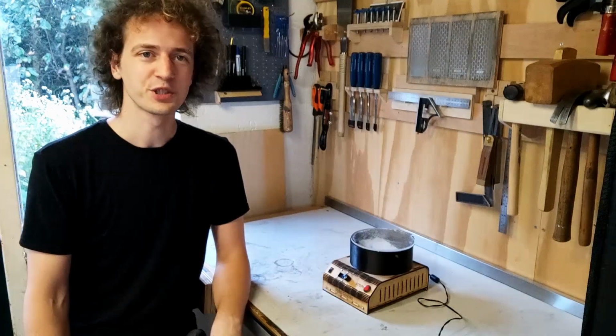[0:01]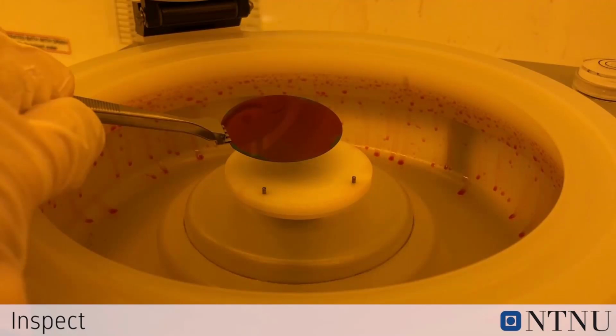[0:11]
Hi, I'd like to show you my DIY spin coater. A spin coater is a device used for putting a very precise thin coat of liquid on a flat surface, on the order of a few micrometers. They're used a lot in the semiconductor industry, for example, to spread an even layer of photoresist onto a silicon wafer or PCB for etching.
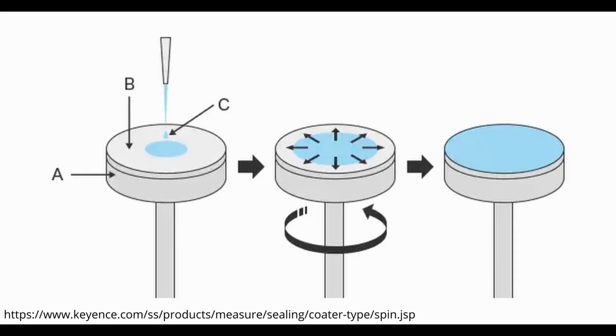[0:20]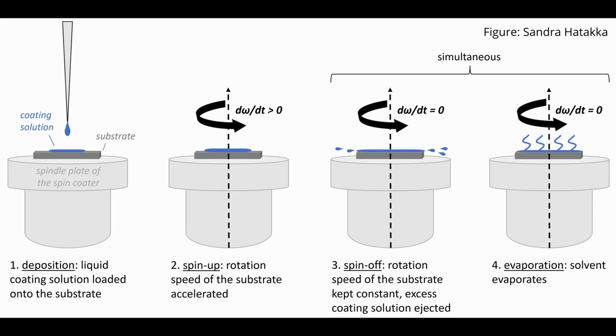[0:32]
The principle is pretty straightforward. You dispense some of the liquid onto the center of the substrate you want to coat, and then you spin it up. The liquid will get flung out from the center and it'll spread out. A lot of it will fly off once it reaches the edge, but some of it will stick to the surface. It's because of this balance between the centrifugal force and the surface tension that you get a very thin, even thickness across the entire surface.
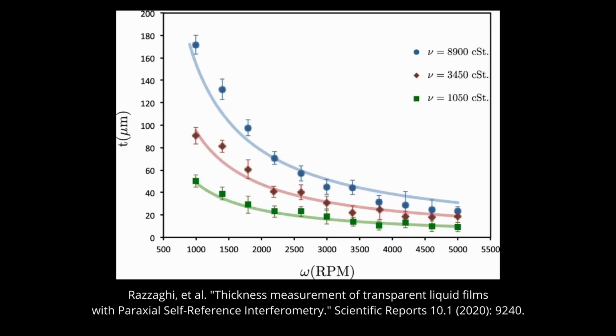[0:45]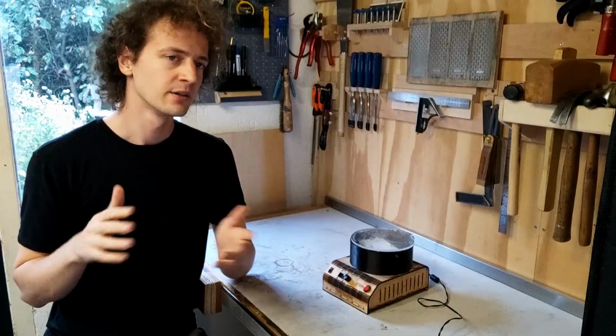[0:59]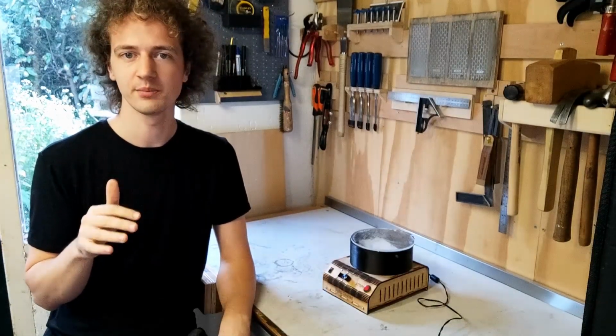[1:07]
The process is very repeatable. The only major factors that determine the coating thickness are the viscosity of the liquid and the spin speed. So how consistent you can get this thickness really depends only on how accurately you can control the RPM of the motor. For me, the reason I needed a spin coater is I was doing an electrowetting project where I wanted to put a very thin coating of silicon rubber onto a PCB in a way that's repeatable so I could do multiple experiments and not have to worry about the thickness affecting anything.
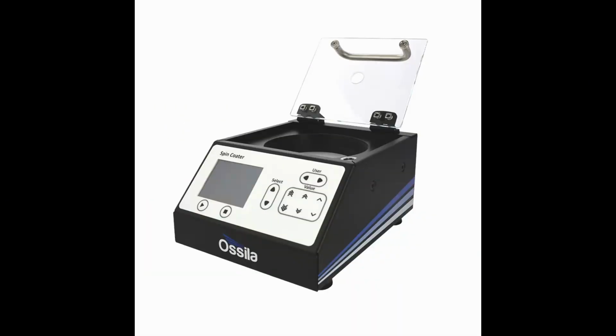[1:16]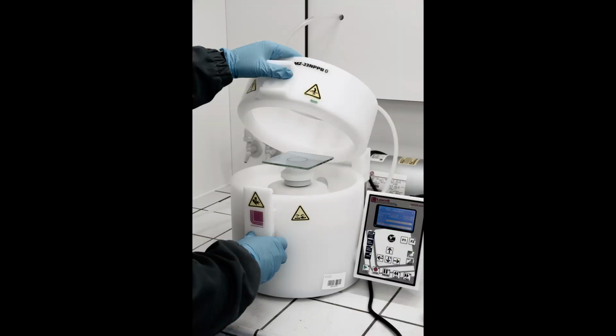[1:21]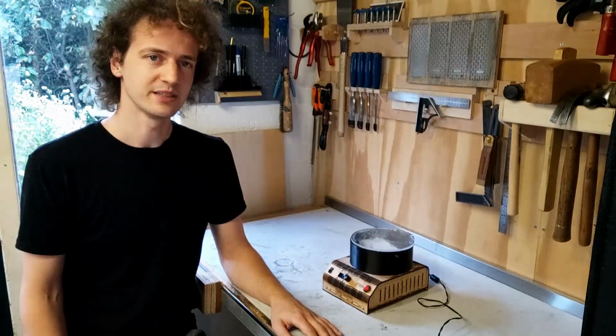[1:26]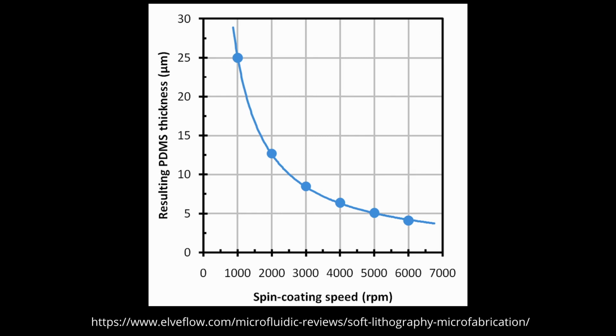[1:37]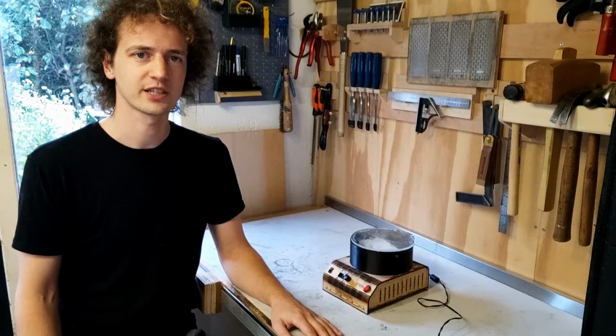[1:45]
Professional off-the-shelf spin coaters are very expensive, costing thousands or even tens of thousands of dollars. I figured I could make my own for less than 100 euros. I considered using just a simple brushed DC motor, but thanks to the drone and RC car community, high-quality brushless motors and their speed controllers are really cheap and easily available these days. From reading the literature, it seemed the RPM range I was looking for was between 500 and 6,000-ish. Most drone motors spin much faster than this, so I had to actually take care to pick a slower motor, like below 2,000 kV, to make sure it could spin slow enough without stalling.
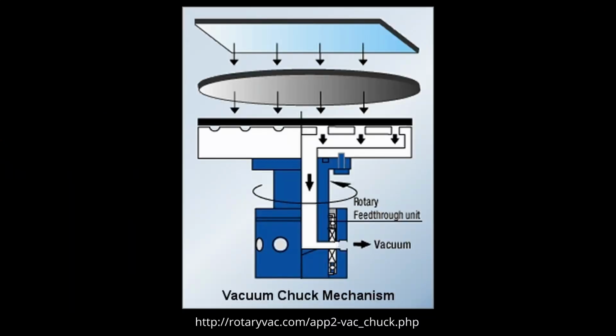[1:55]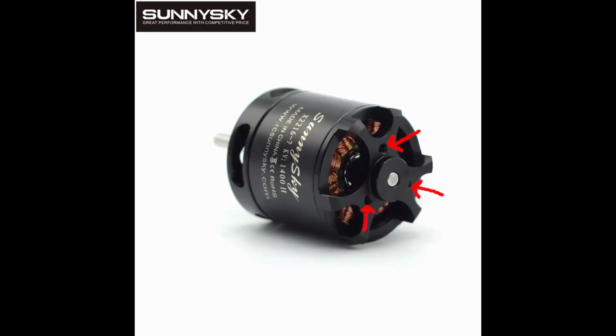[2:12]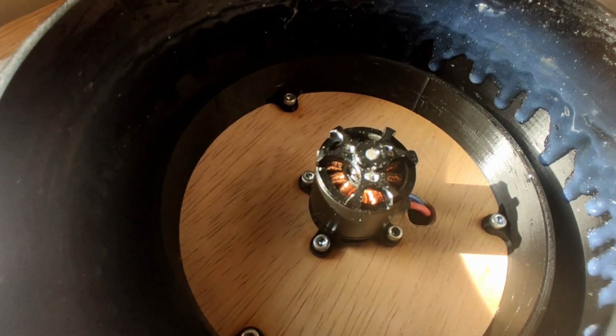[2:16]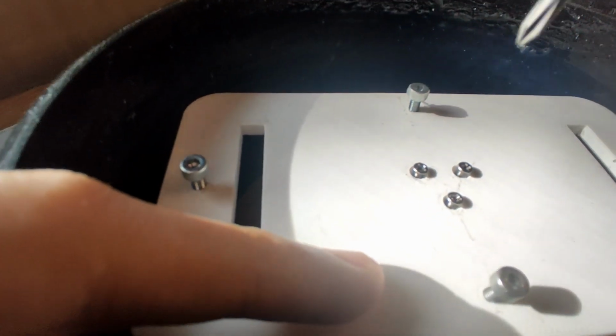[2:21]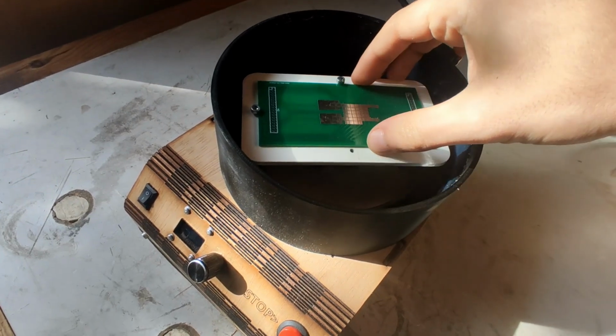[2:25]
To hold the PCB in place, commercial spin coaters often use a vacuum chuck to basically suck on the underside of the PCB to keep it in place. This involves creating an airtight seal in a spinning platform, and that's just something I really wasn't looking forward to doing. To keep it simple, I noticed that some brushless motors have tapped holes in the rotor, so I figured I could just 3D print or laser cut a platform that fits my PCB, and then bolt that down into the rotor and use more screws to clamp down the PCB.
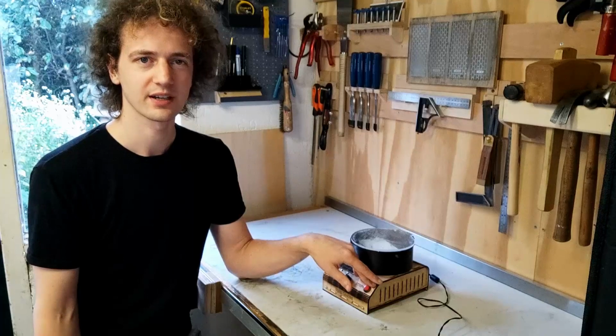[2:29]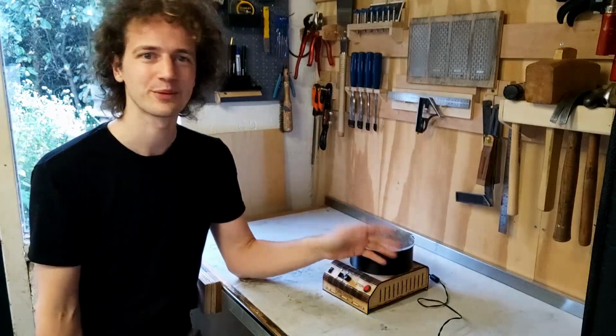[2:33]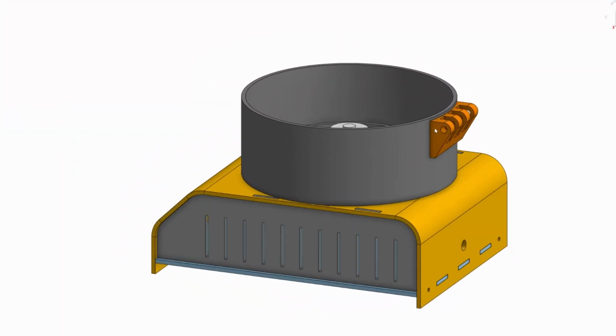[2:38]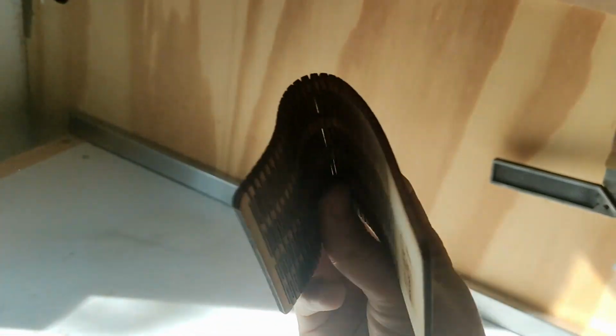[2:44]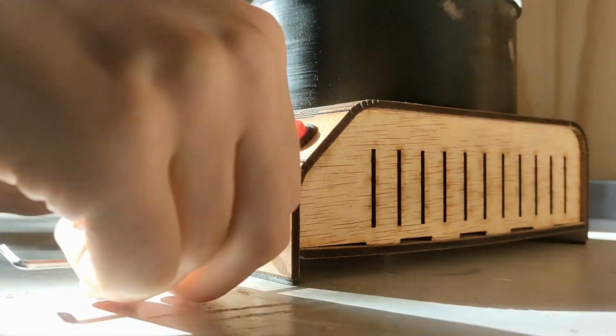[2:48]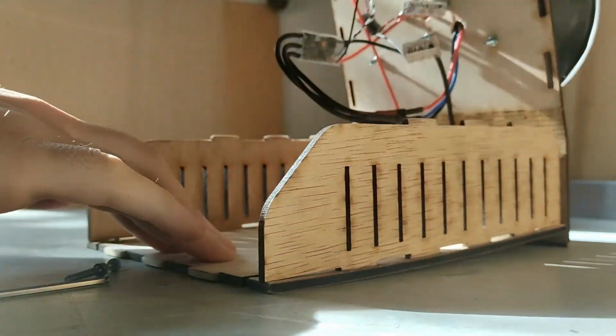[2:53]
For the enclosure, I laser cut some plywood, because I have access to a nice laser cutter at my local hackerspace, and plywood is cheap. I ended up going for a design where the front, top, and back are all a single curved piece. I cut a dense pattern of alternating slots using the laser cutter. It's a technique that's often used to make plywood flexible. The whole thing is held together using only four screws, two in the back and two in the front, and I only need to remove the front two to basically curl open the whole thing.
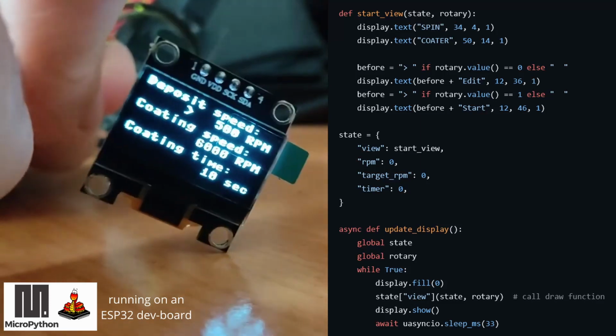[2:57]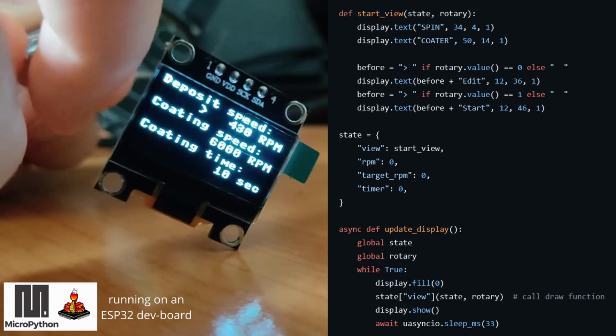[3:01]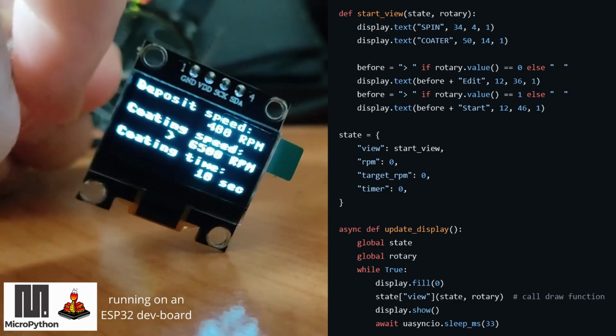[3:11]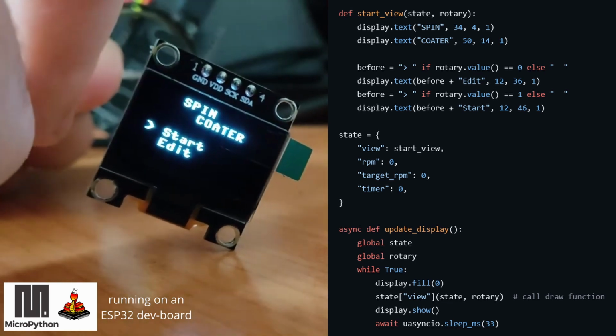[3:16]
While I was waiting for the rest of the parts to arrive, I got started on the user interface. I tried a few different approaches, and I ended up writing an update loop that runs different draw functions based on where the user currently is, kind of inspired by how the React framework works in JavaScript. The final interface is simple, but I feel it's intuitive.
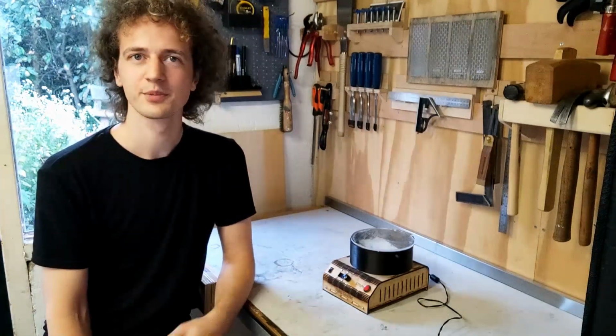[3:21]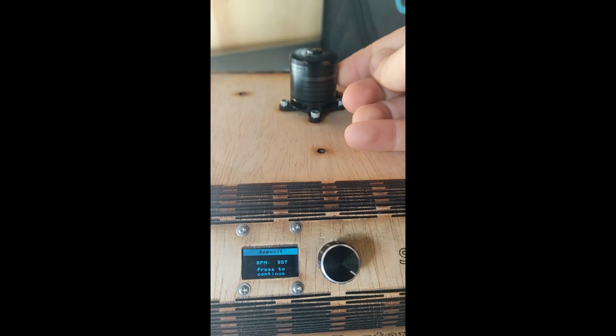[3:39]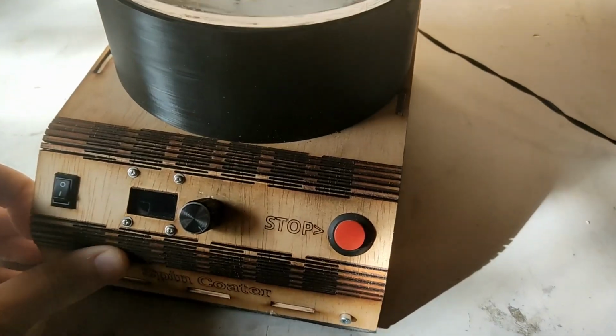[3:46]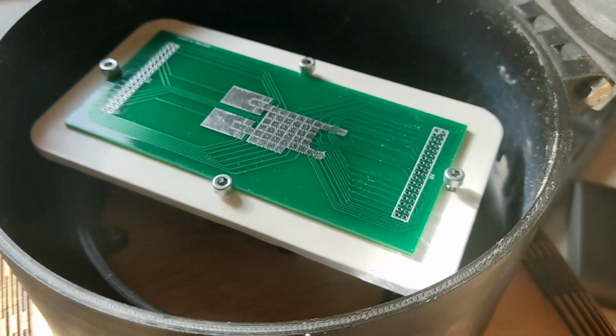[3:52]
In principle, precise speed control of a motor is not too difficult. It's your textbook example of a PID feedback control loop, but you need a way to read out the RPM from the motor. The ESC is capable of doing this, but getting that data out of the ESC is not so straightforward, and it ended up being the most time-consuming part of the project by far. After tuning some of the PID values, the motor was humming away and staying at the specified RPM beautifully, even under various finger-induced loads. To finish up the build, I added some foam to dampen vibrations, and 3D printed the splash guard and the spinning platform to hold the PCB with hold-down screws.
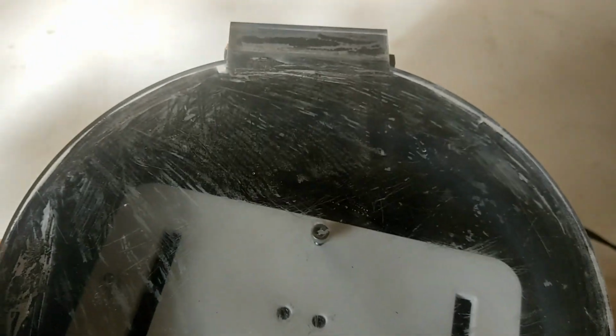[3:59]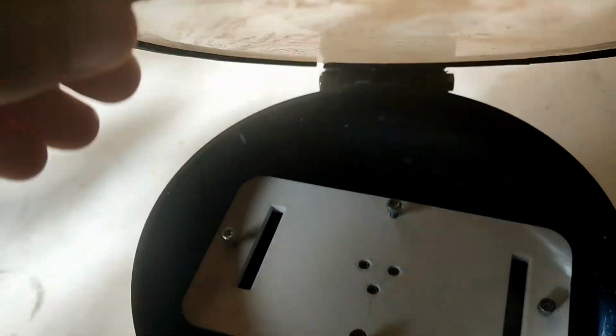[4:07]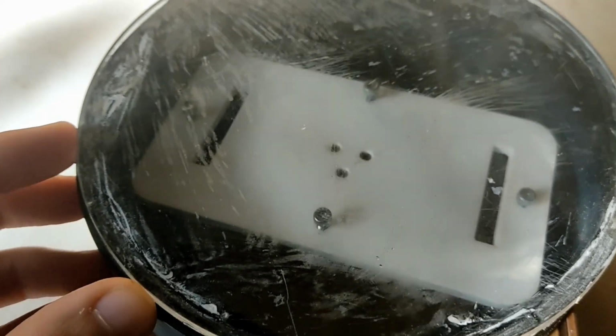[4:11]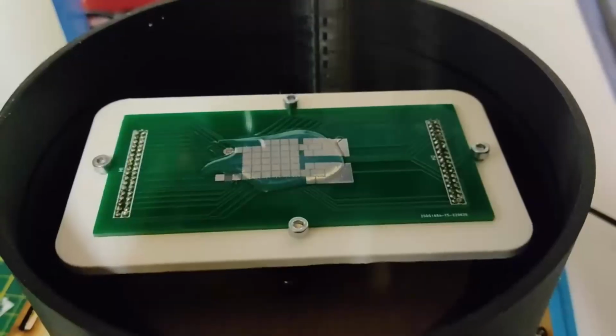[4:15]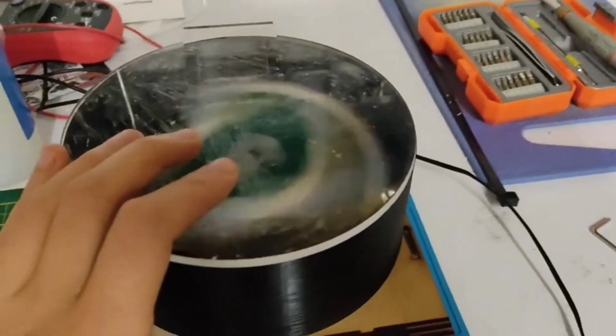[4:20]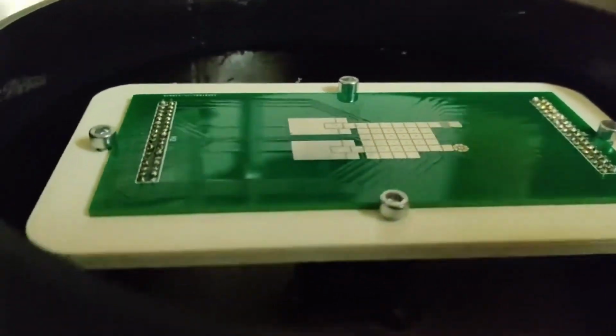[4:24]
For the lid, I used a piece of transparent acrylic someone left in the scrap pile at my local hackerspace. I think it's been there for a long time, because the protective foil did not want to come off cleanly. In my impatience, I ended up scratching the acrylic quite a lot. All in all, I'm very happy with the result. Even using the pretty viscous Sylgard 184 silicone rubber I have, spinning at 6000 RPM for a few minutes leaves a very nice shiny layer with no visible imperfections.
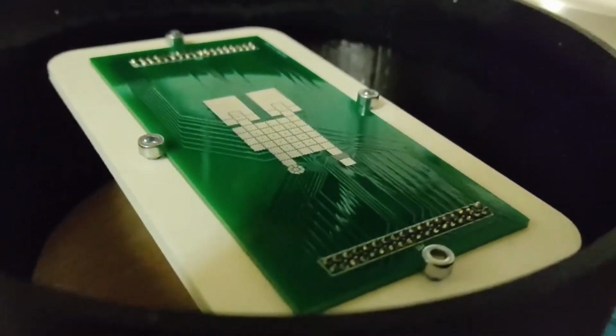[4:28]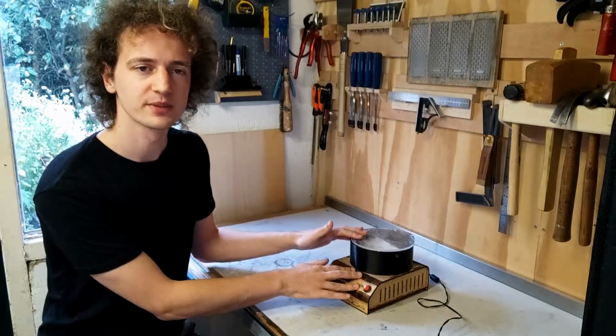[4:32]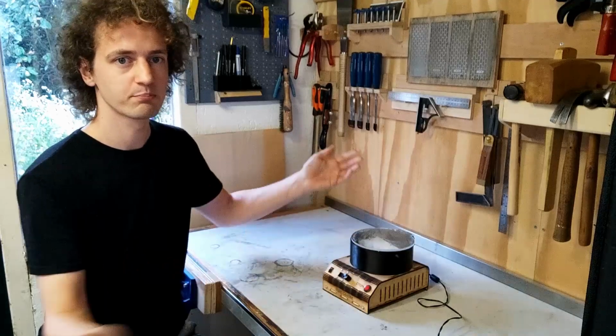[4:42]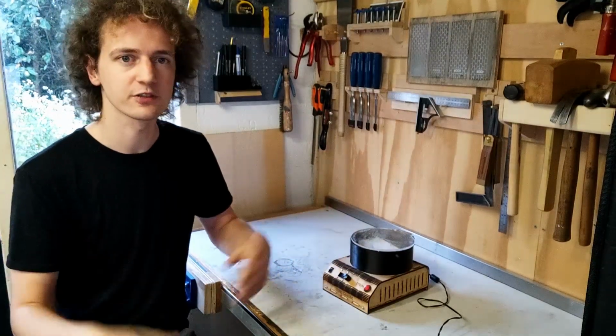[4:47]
Ooh, shiny. Now, this is definitely a first version, and there are some improvements that come to mind. The enclosure could be stiffer, the electronics need some tidying up, and there's still some vibrations that could be dampened out. But it works! I've been using it for a number of months, and it has served me well.